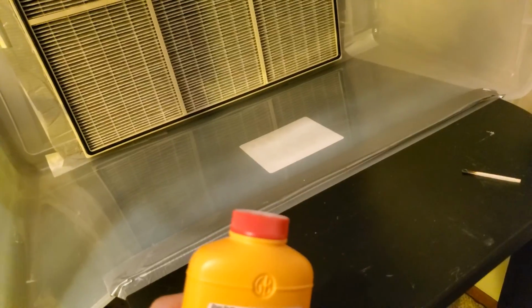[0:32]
Okay, so today we're going to be making a cheap, easy, and quick laminar flow hood. A laminar flow hood is a device that blows air through a filter. So you get filtered air coming through this filter here, and then the air is moving horizontally. Any dust that would fall in this path of air that's blowing, there's an air current here, it'll just blow the dust out. And because the air is filtered, no dust is coming through the filter. So you have a fairly dust-free environment here. So without further ado, let's get started.
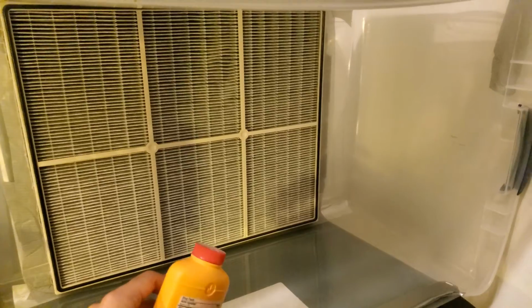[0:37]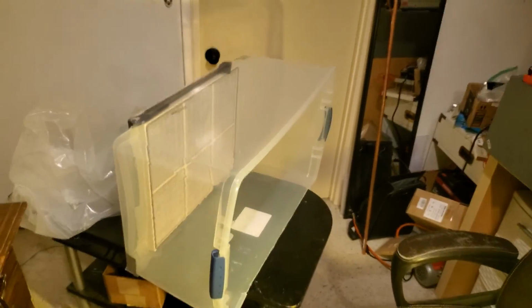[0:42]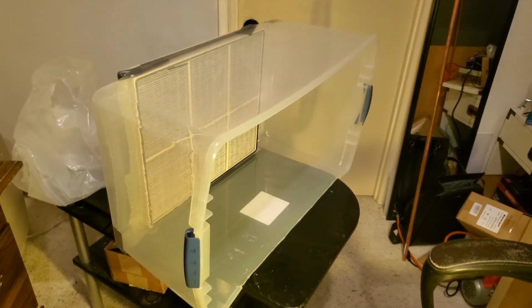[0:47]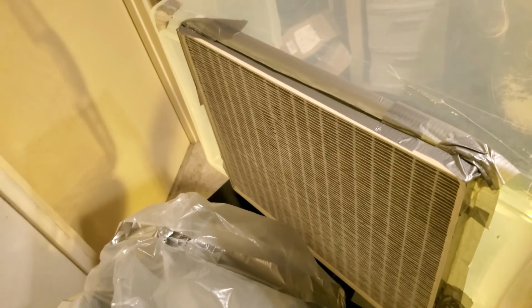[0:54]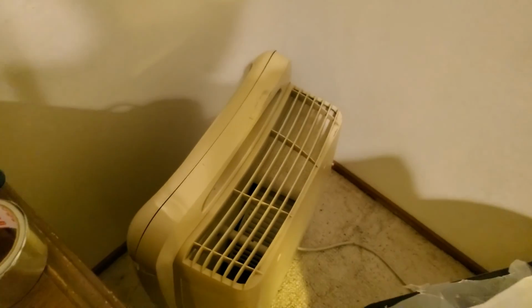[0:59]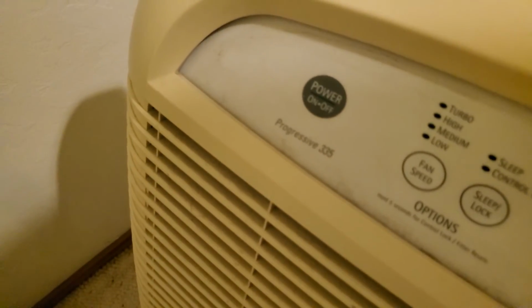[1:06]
So this is the design. You've got a plastic storage box, and on the back of this plastic storage box, you basically just cut out a hole and you put a HEPA filter here. And the HEPA filter was taken from this air purifier here, which is a Progressive 335 air purifier that I found for free on Facebook Marketplace.
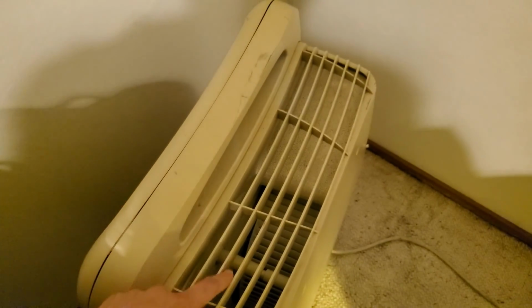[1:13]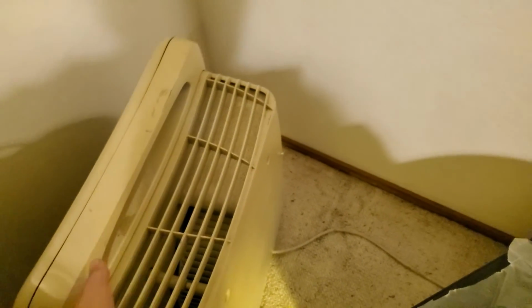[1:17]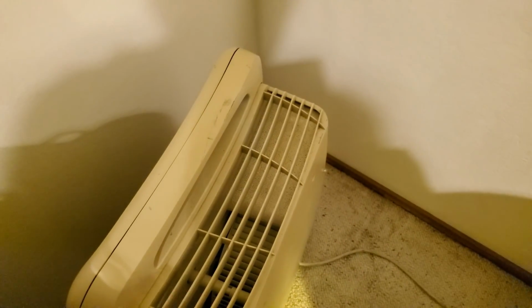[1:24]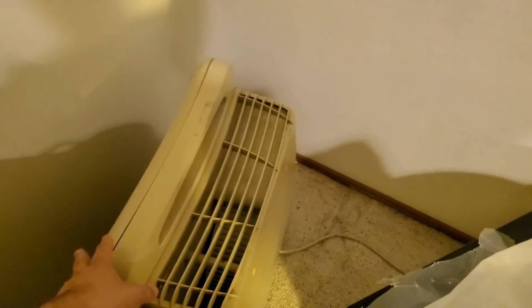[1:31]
And all that's in this air purifier is a blower fan that moves air through this vent here. So what you need to do is get air from this vent through the HEPA filter that you took out of the air purifier. Normally the HEPA filter would sit in the front here, but I took it out so I could filter the air coming directly into this storage box, and this will be our actual flow hood.
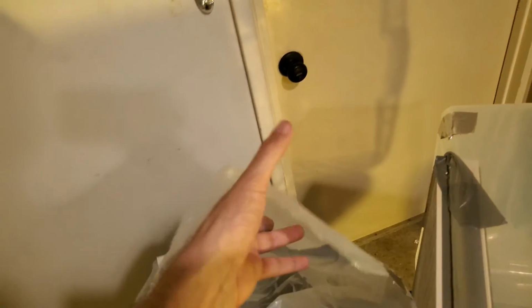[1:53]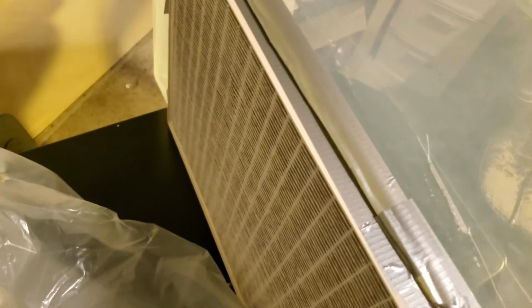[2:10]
So to connect this vent to the HEPA filter, I'm using a plastic tarp, and I just cut a rectangle and then taped it into a tube. So that's what this is right here. And then I'm gonna attach each end of this tube of plastic, one end to this vent and the other end around the HEPA filter. And I'm gonna use this aluminum foil tape to do it.
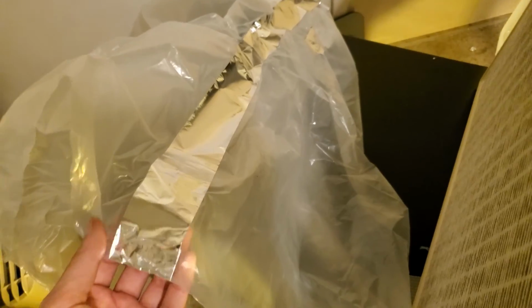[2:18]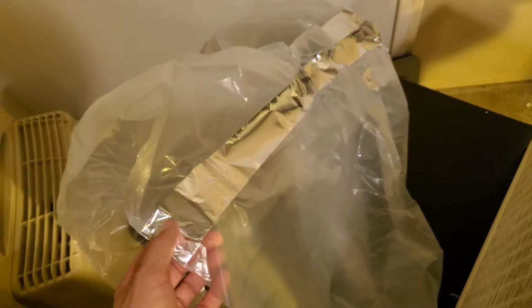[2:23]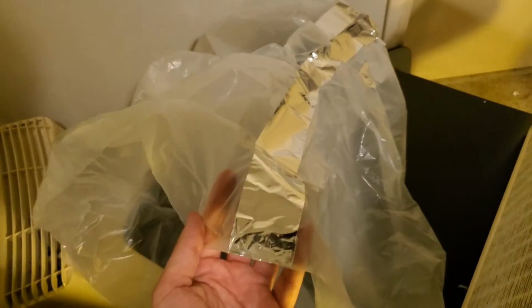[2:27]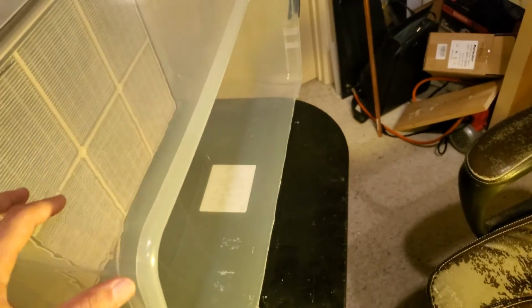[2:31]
Initially I used duct tape, but I found that over time the duct tape will come undone. It doesn't adhere very well to this plastic tarp. And this tarp is just the plastic tarp that they use to cover floors when people are doing painting. So yeah, that's it. So let me tape it up.
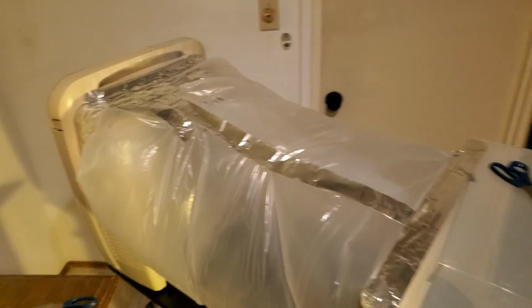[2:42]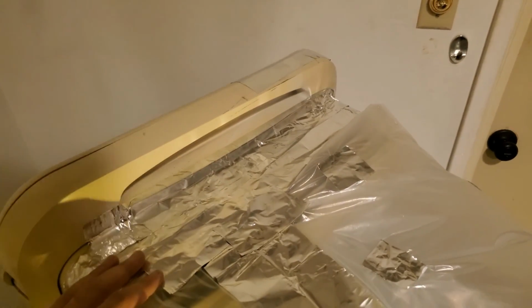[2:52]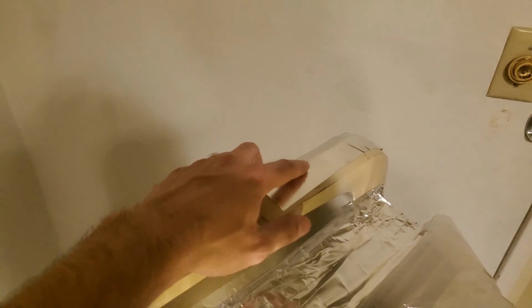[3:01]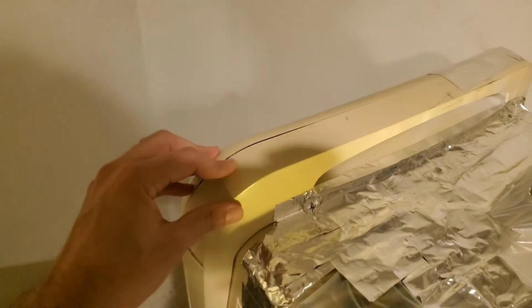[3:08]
So this is the hood taped up, and once you've done the first pass of taping the ends of the cylinder, turn the blower on and make sure you check for air leaks. For example, I had some leaks around here and I just went over it with more tape, or even up top here, there was this section that was leaking air, so I just put some tape over it, and I'm gonna put some tape over here. So just be aware of that.
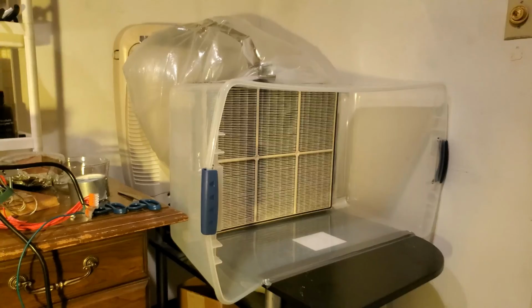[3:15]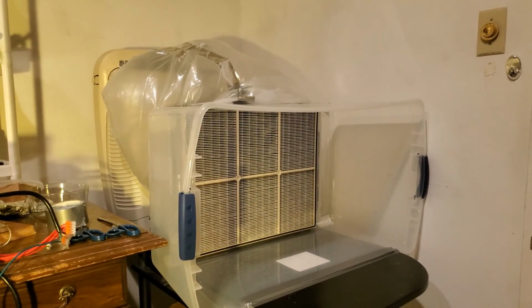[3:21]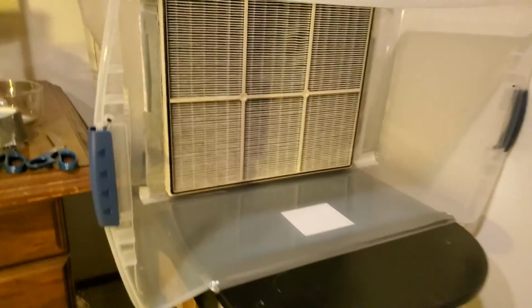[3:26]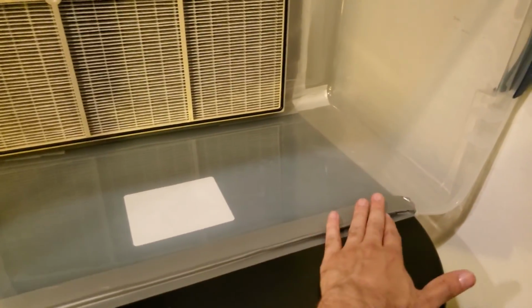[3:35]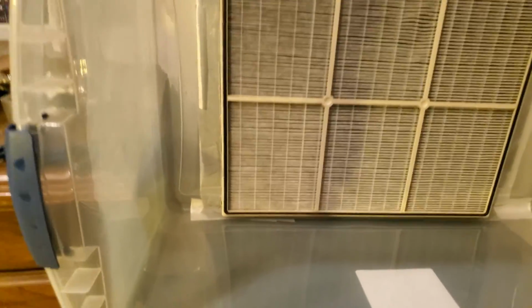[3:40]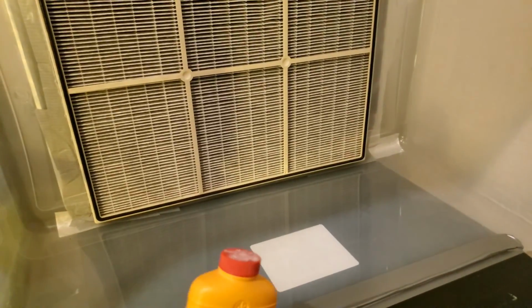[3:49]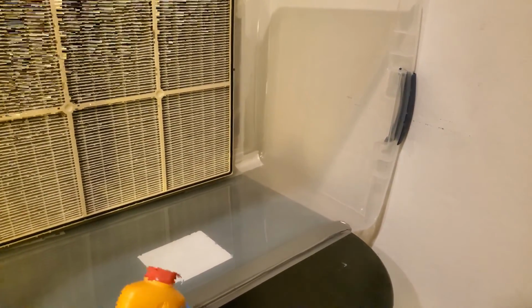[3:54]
Okay, so here's the laminar flow hood all set up. I ran out of the aluminum foil tape, so I still have to tape up a couple spots, but it's good enough right now. And I'm using duct tape here to secure this, but that's just because I don't have the aluminum foil tape, otherwise I would use that. And I've got the fan on maximum speed, and then as a really quick test to see whether or not it's actually blowing air, I've got this Gold Bond powder, and you can just give it a puff and you'll see that it's blowing it right out.
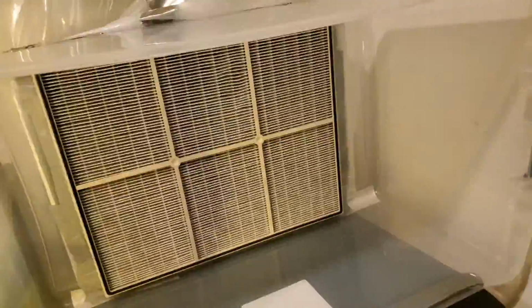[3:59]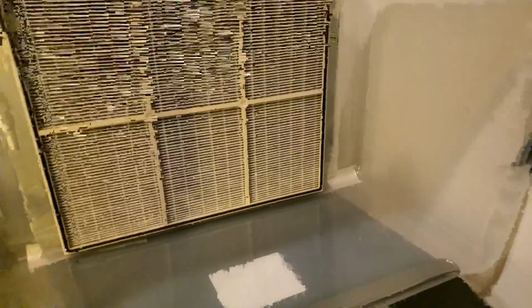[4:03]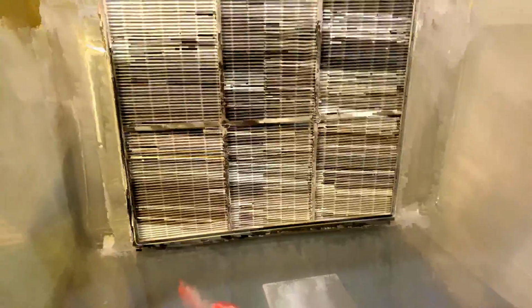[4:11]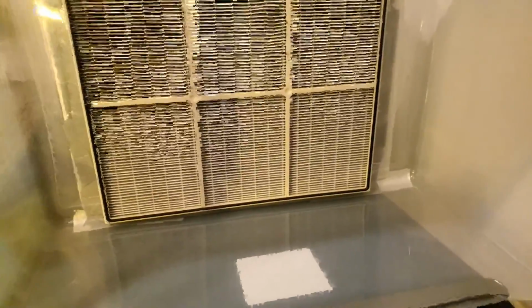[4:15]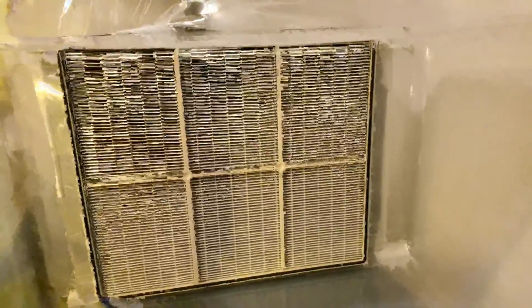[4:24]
So that's it. It's not the best laminar flow hood in the world. I don't even know if you could do cell culture with it. I'm just using it to get rid of dust when I'm spin coating a photoresist onto a silicon wafer. I'm trying to make sure there's as little dust as possible to a reasonable degree. I'm not trying to do cell culture with this. And for my purposes, it works really well. And it's very cheap and very quick to implement.
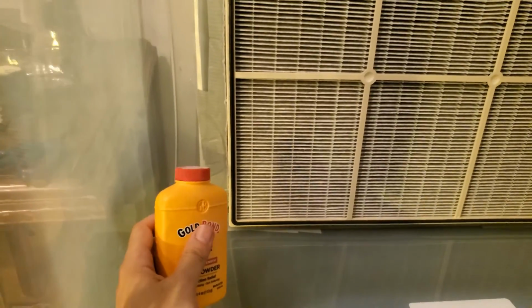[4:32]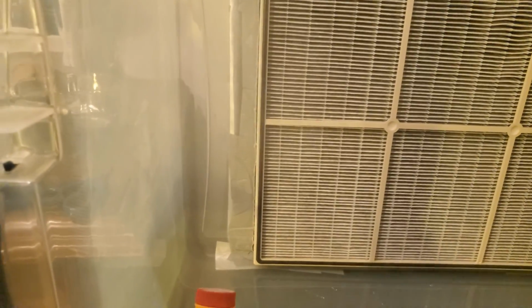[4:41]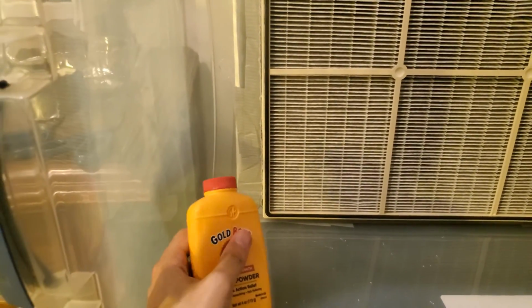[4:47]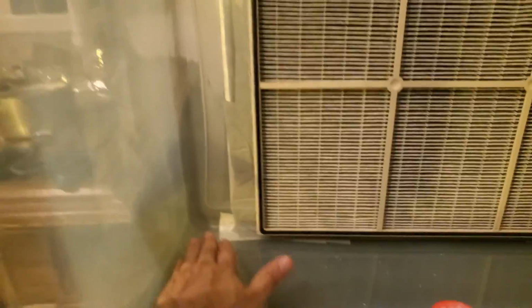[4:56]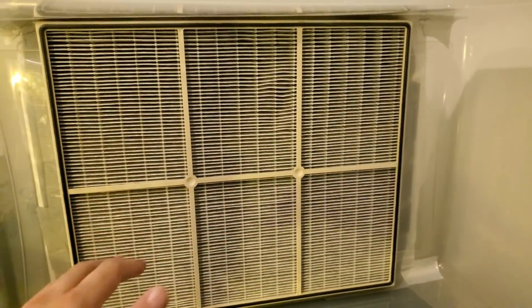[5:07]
And another thing to note about these flow hoods is that these sides where the HEPA filter is not positioned, these are not really dust-free. I don't know if you can see it here. So the stuff will blow out if it goes in front of the HEPA filter, but if it's just in the corners, it doesn't really come out right away. You can get dust kind of accumulating on these sides. It's not going to be a lot of dust, but it is there. This is not a dust-free zone, so anything that you want to be dust-free, make sure that it's in front of the HEPA filter.
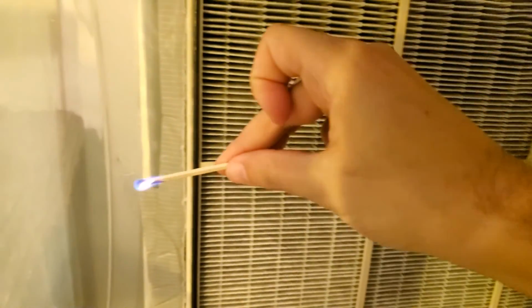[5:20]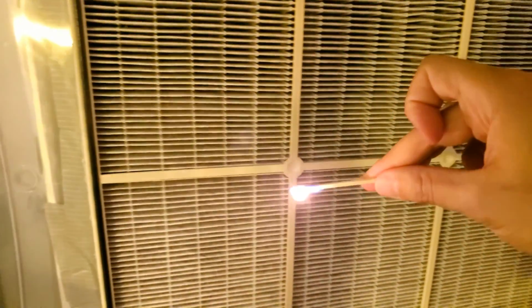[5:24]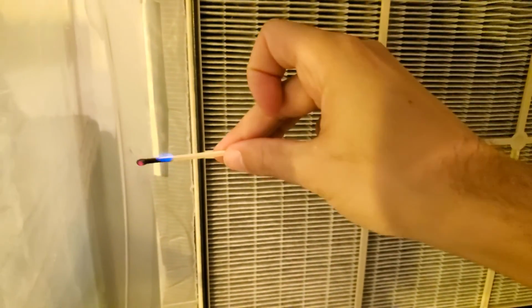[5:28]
So this is just using a match, and you can see where the flame is blowing, and then in the corner it turns bright, and then over here it's getting blown out. So those corners really are not dust-free zones.
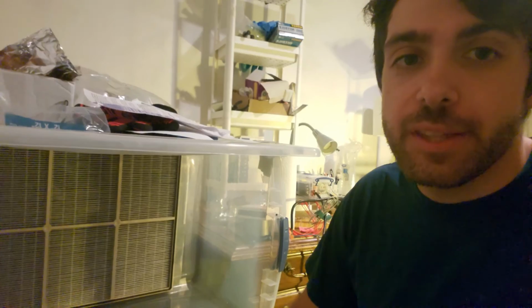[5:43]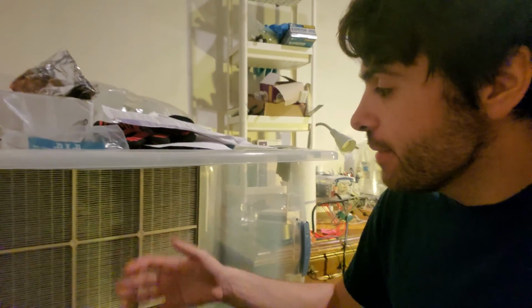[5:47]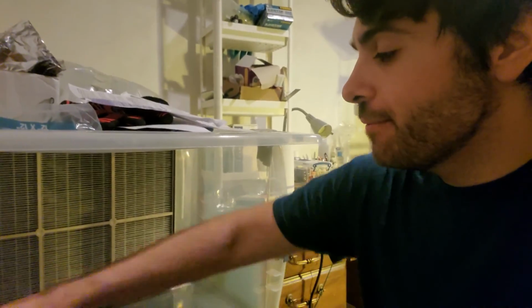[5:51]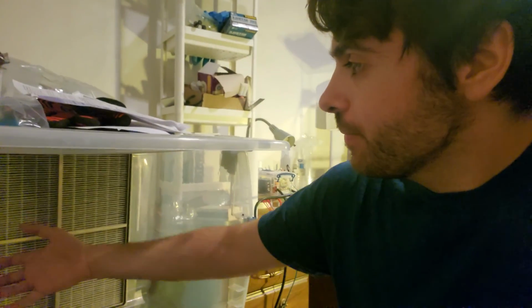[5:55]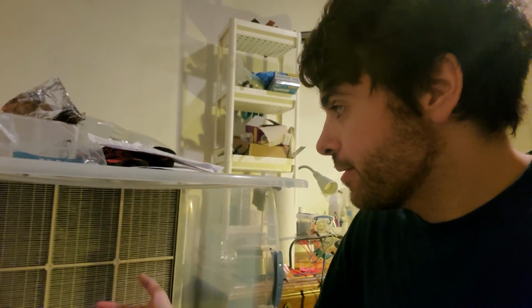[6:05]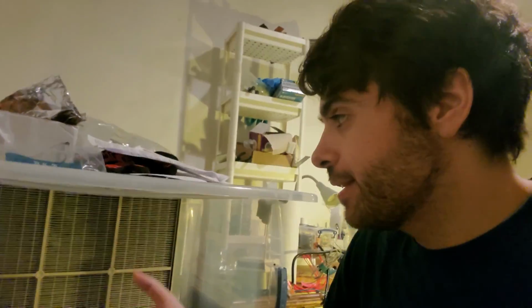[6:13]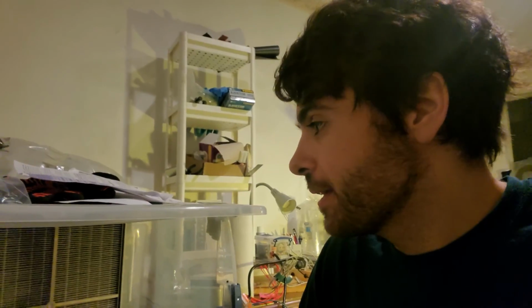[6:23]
One thing that's pretty amazing about this flow hood is that the strength of the current of air that's actually coming through the filter is surprisingly strong. I mean, I can feel it blowing on me. So it's not bad. There's definitely better videos out there in terms of how to make an even better quality flow hood with better HEPA filters and a really strong blower fan, but this is really not a bad solution. You will get rid of a lot of dust, and I don't plan on testing it for cell culture purposes, but if you really wanted to, I suppose you could probably use this for that. Certainly you could use it to do something like pour agar in petri dishes.
Okay, so that's it. This is the cheap, easy, quick laminar flow hood. I put a little shelf here. I just used the top of the storage container. And it's not the best laminar flow hood in the world, like I said, but it'll get the job done if you just need a reasonably dust-free environment.